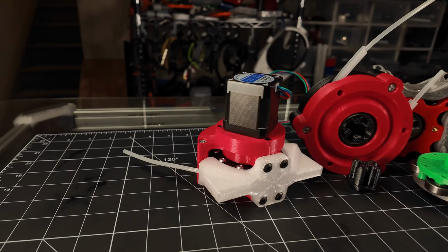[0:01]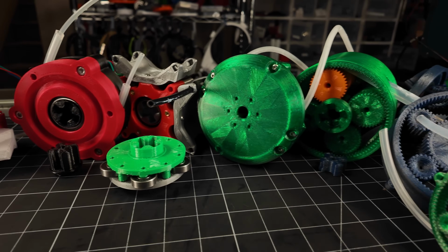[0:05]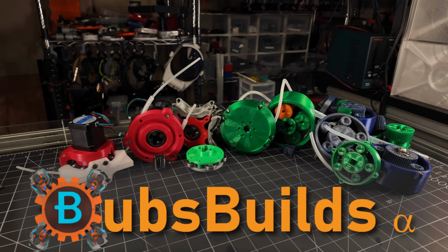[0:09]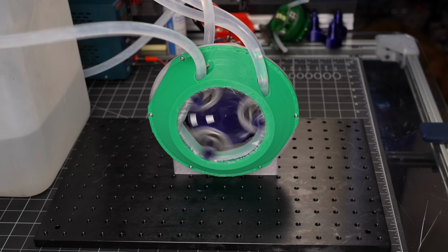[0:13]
Peristaltic pumps are one of those things I seem to find myself coming back to time and time again. While I've made quite a few different pump designs over the years, they've all been of the relatively low flow rate variety. Enter my first high-flow peristaltic pump. It has two separate flow channels, each of which capable of flowing up to 5 liters per minute.
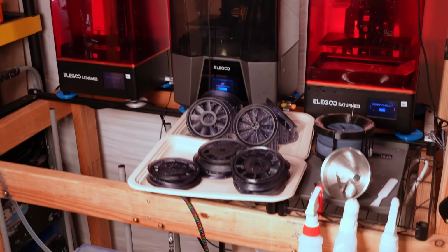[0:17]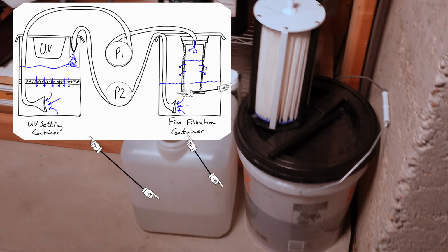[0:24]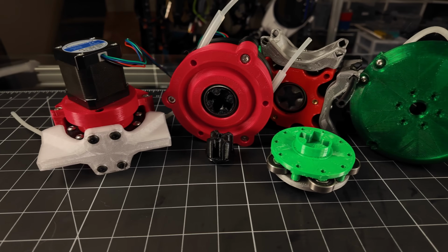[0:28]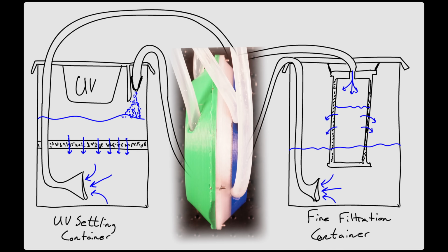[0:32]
This build started when I decided I wanted to up my game on my isopropyl recycling for my resin printers, and that's going to require circulating IPA back and forth between these 5-gallon buckets, and that calls for something with a much higher flow rate than any of my previous builds could offer. The two channels will allow me to have the system run in a loop, continuously flowing from the UV settling container on this side, over to the filtration container on that side, and back.
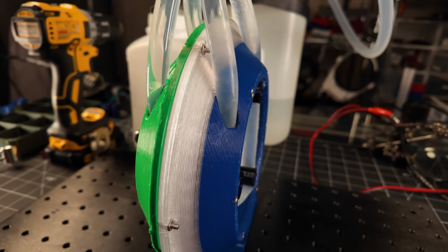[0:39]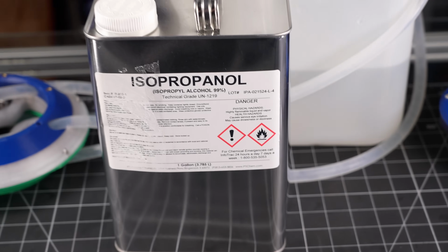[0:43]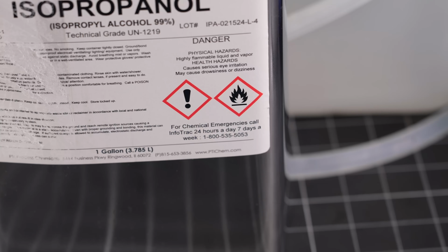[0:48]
And because it's a peristaltic pump, the IPA never has to leave the contained system, reducing the risk of this flame-loving fluid from finding its way to electronics. Why the hell did I make myself say that sentence?
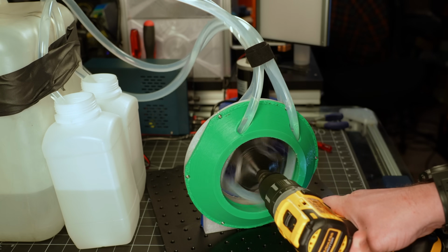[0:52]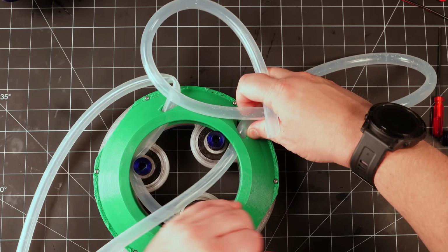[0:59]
Now, did I need to flow 2 liters a minute to accomplish this? Probably not. But now it can. So, you know. Plus, with the larger volume, if I don't need the flow rate, I can just run it slower and extend the life of the tubes, hopefully.
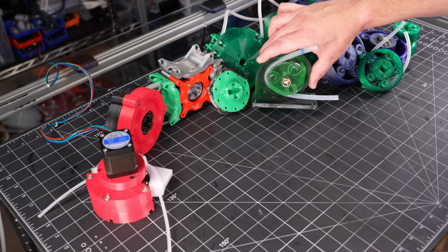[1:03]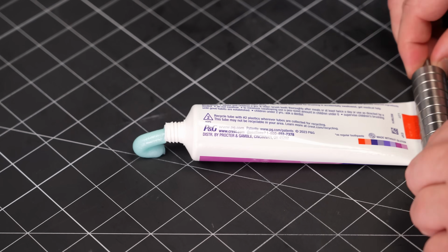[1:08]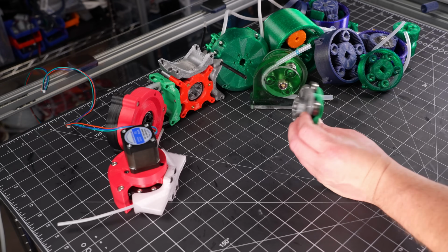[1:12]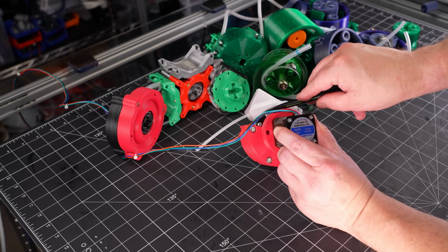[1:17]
If you aren't familiar with peristaltic pumps, they work like extruding toothpaste out of a tube. Moving the squeeze point along the tube pushes the fluid through the tube. This is often done by putting a series of roller bearings around a wheel and using those to squeeze the static tubing against a static wall, just like I did for this previous build.
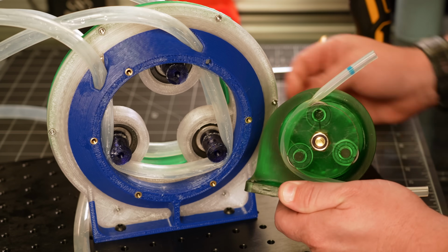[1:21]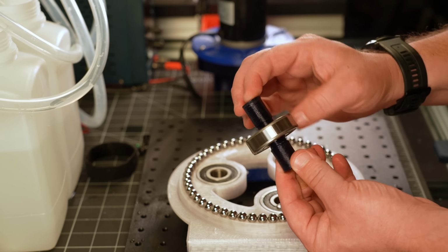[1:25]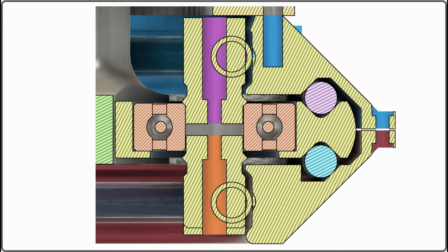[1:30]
But I wanted to try a little tweak on this concept for the high flow pump. Instead of using the outer diameter of the bearings as the contact points, I wanted to run a shaft through the inner diameters of the bearings and use these shafts as the contacts. This lets the inward force from the tubing balance each other around the bearing, keeping the load into the bearing to just the radial load that it's designed for. But what about all this stuff over here?
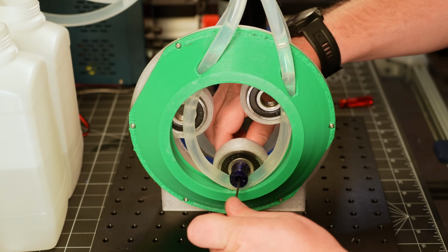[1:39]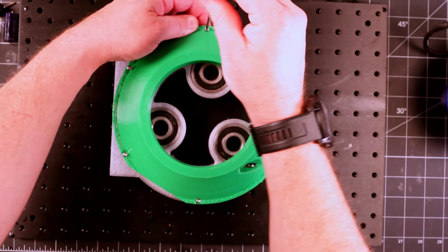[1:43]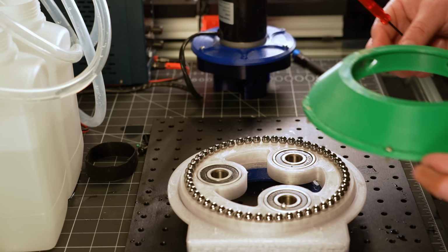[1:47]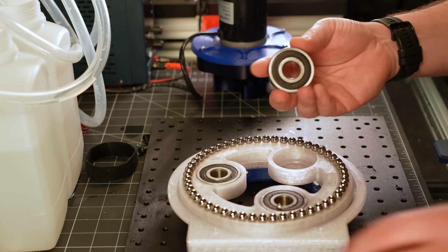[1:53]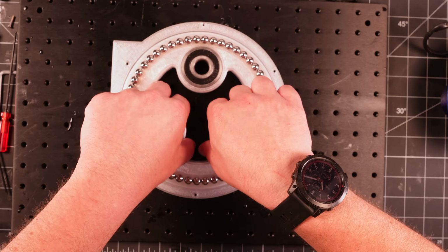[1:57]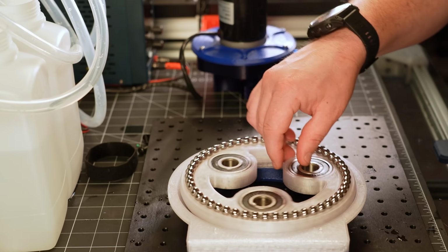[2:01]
Well, let's crack it open and take a look. Getting the tubing out of the way first, then loosening the 6 M3 fasteners that go around the perimeter of the pump, I can then take off the housing and expose the main bearing, which is made up of all these 3/8-inch steel balls in a 3D printed V-groove race. And being held in this rotor are 3 beefy roller bearings with our contact posts running through them. Picking up the rotor, carefully, exposes a mirror set of these balls that form the other side of the main bearing. And look, it spins!
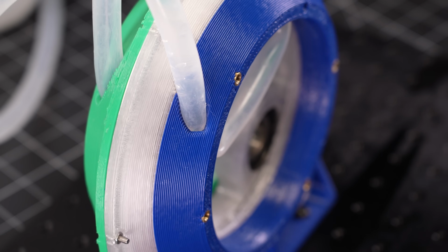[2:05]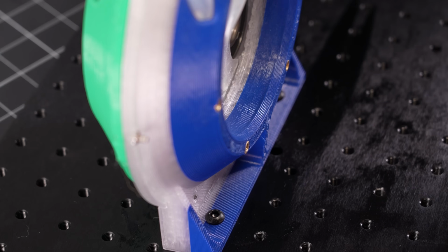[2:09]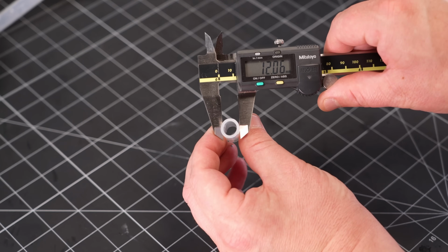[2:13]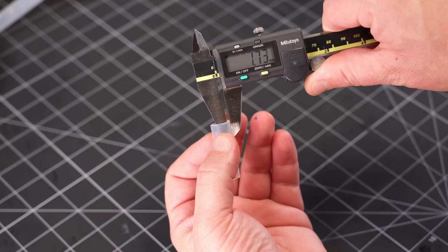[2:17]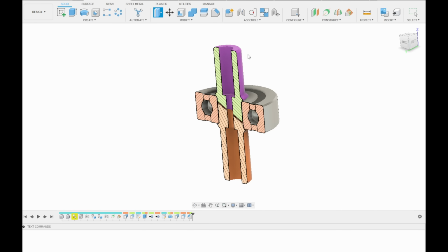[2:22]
Putting it back together, we can see that the tubing enters the housing through these openings and sits within these tracks on either side. I designed it for use with 12mm, or about a half inch, outer diameter tubing that has a 1mm thick wall, but it can also be used with smaller tubes that have the same wall thickness, or by swapping out the contact posts, it can be used with thinner walls as well.
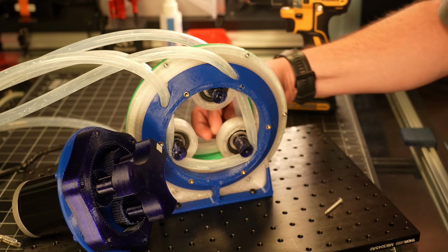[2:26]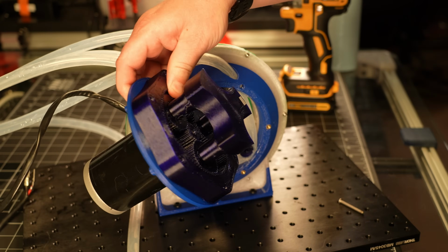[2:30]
To drive it, the hubs have these lobes that engage the rotor right around the roller bearings, and I've made a few different hubs, including this one that allows me to drive it with a socket wrench.
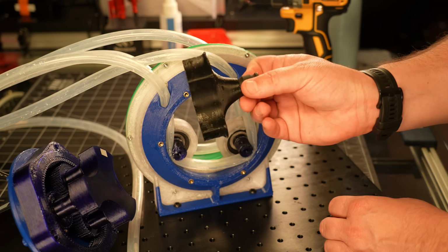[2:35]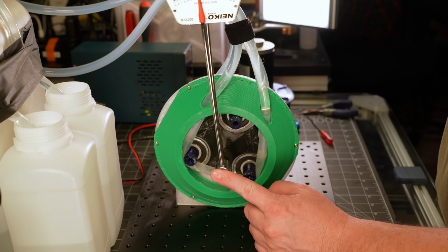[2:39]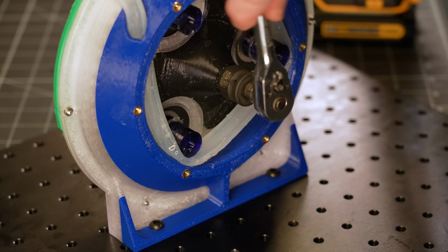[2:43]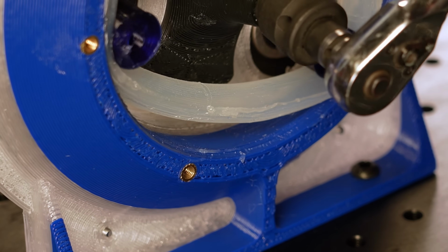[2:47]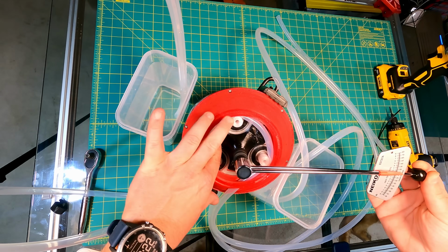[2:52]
Using this adapter, I tossed a torque wrench on it, and found that it takes about 3 newton meters, or about 2 foot-pounds, to turn the rotor. Yeah, that's a bit high, although not a huge surprise given all the friction caused by squeezing such a large diameter of tubing. And although it's high, this should be well within the torque available for my drill, and that's good enough for me for now.
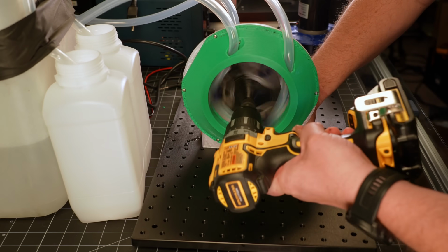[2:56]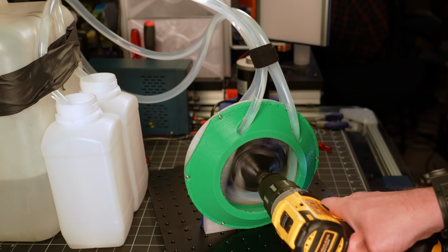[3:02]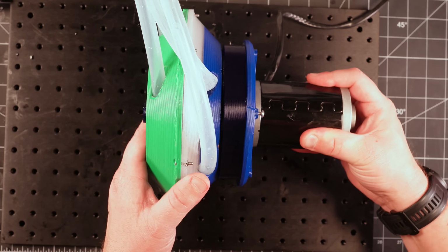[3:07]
Speaking of, let's throw the drill on it and see how it does. Unsurprisingly, the drill has no real trouble spinning the thing faster than I'd feel comfortable standing next to. And although my plan for now is to just drive it with the drill, I couldn't help myself trying to strap a motor on it.
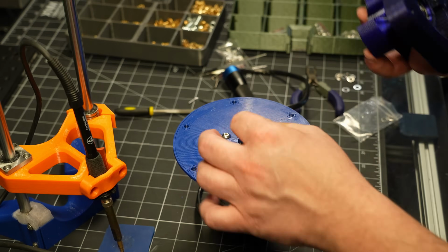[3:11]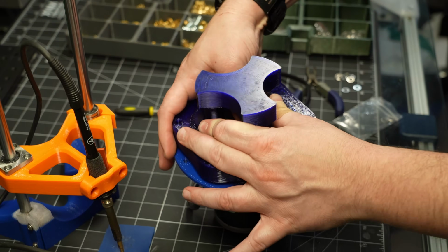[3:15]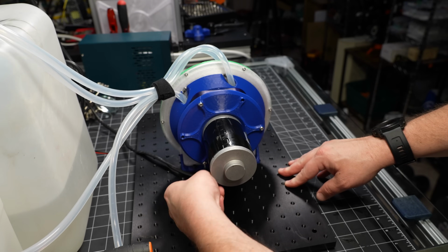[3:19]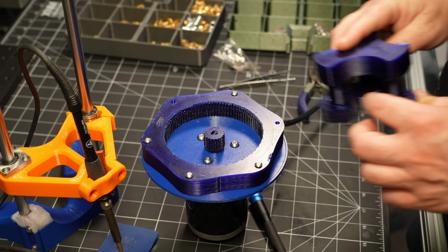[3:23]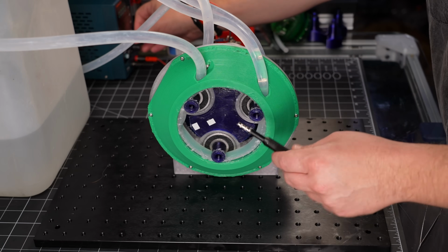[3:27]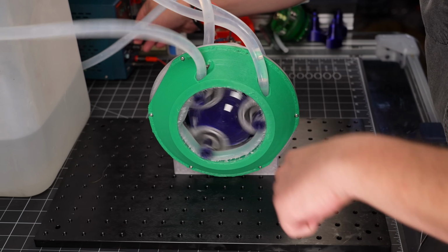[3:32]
So I tossed together this printed planetary gear set that gives me a 4-to-1 gear reduction. I would have preferred something closer to a 10-to-1 since the motor I had on hand has a no-load speed of around 3500 RPM, but I would have needed a larger redesign of the pump to fit the larger gear set, so 4-to-1 it is for now. Unfortunately, this means it doesn't quite have enough torque to overcome the static friction, but after a little help to get things going, it worked pretty well.
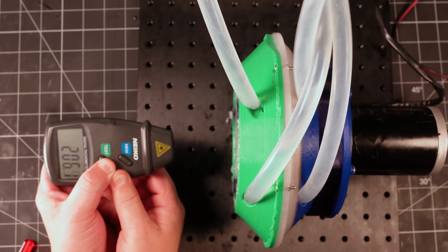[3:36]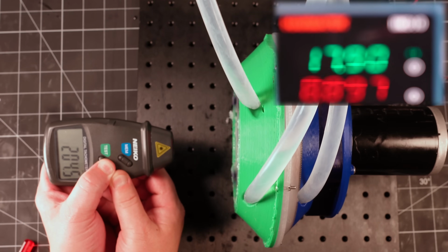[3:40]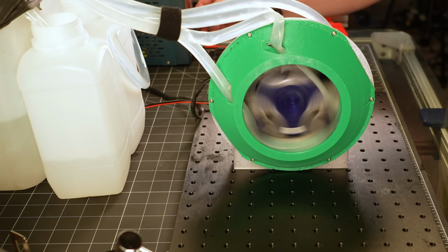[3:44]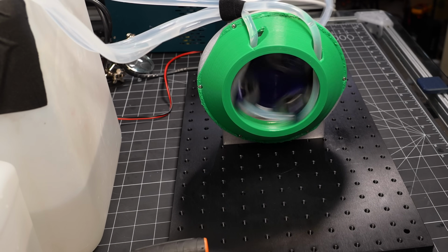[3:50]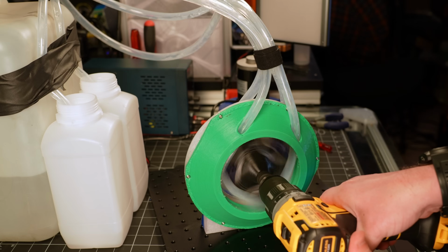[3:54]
I used this little tachometer to measure the RPMs, and it maintained 200 RPM at about 18 volts, but while drawing an undesirably high 9 amps of current. Running it at 200 gave me a flow rate of a little more than 2 liters per minute, not quite a fire hose, but I'll take it. While I was pleasantly surprised at the performance of my quickly assembled gearbox, I don't like that current draw, so for my needs right now, I'll stick with the trusty drill.
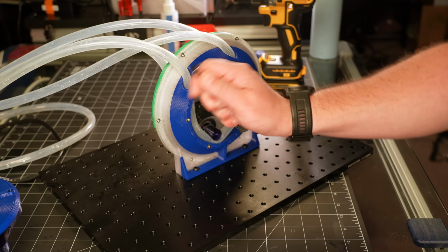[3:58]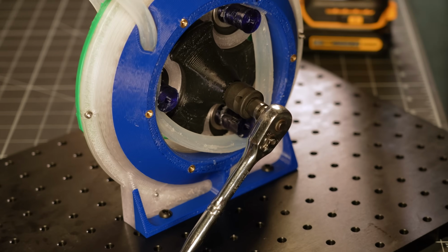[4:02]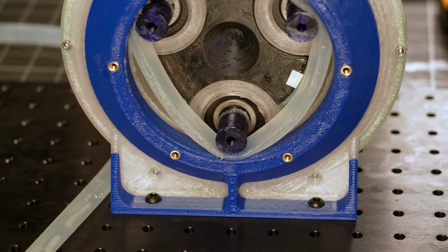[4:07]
I also find it kind of handy that I can just pop a wrench on it and manually run the pump. I found myself using that feature a couple of times during my playing with it, during testing.
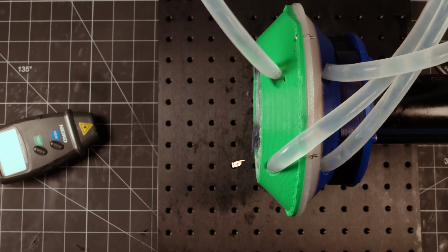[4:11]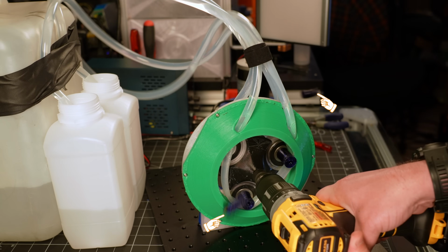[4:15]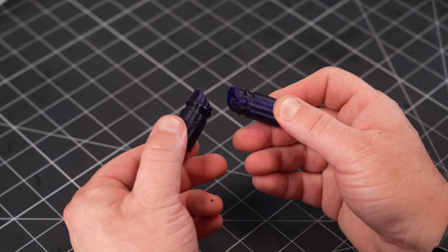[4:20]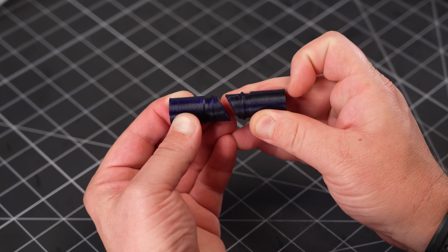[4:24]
One of the main issues I've run into has been with the fasteners through the contact posts backing themselves out. Luckily, despite some of the awful noises it made when this happens, it surprisingly didn't actually break anything. I added these features here to the posts to give them some geometric resistance to rotation. Between that and a little bit of thread lock, they then held up just fine.
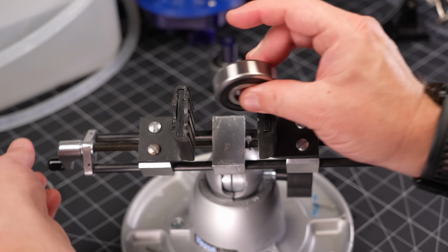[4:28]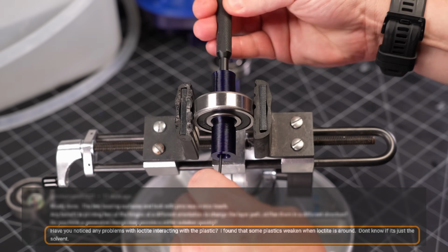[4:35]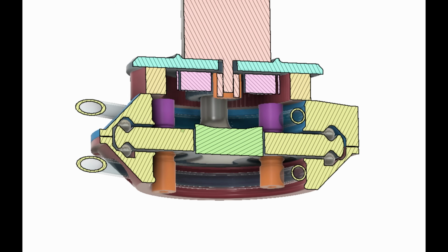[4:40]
Although, in a word of warning, on my last video it was pointed out that this may not have been a great choice. It's on my to-do list to look into this some more, but in the meantime, consider yourself warned. Thanks again, Mike. I have some thoughts on a more robust fix for that, but as with gearing, it calls for a larger redesign.
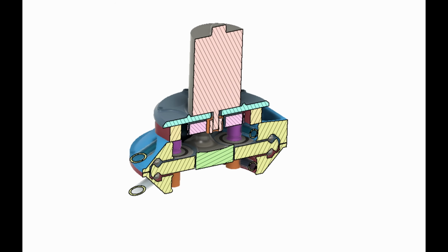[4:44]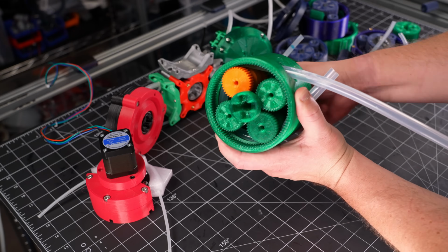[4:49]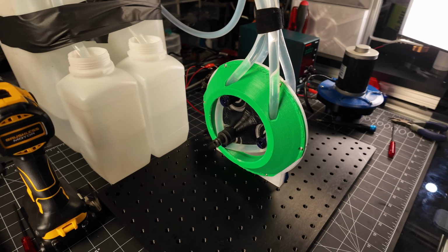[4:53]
And I think instead of iterating this design further, I may instead combine this high flow pump design with this planetary pump concept I've also been tinkering with. But that's a build for another day. My drill-powered pump checks all the boxes for my current needs, so I'm gonna call this one here for now.